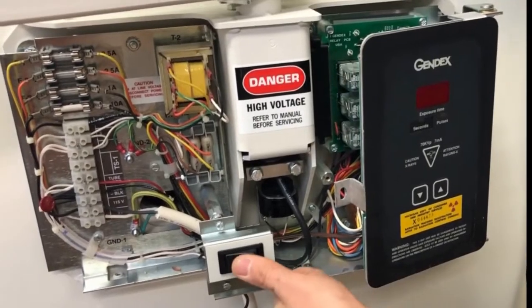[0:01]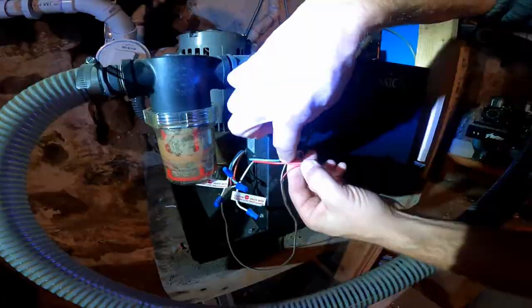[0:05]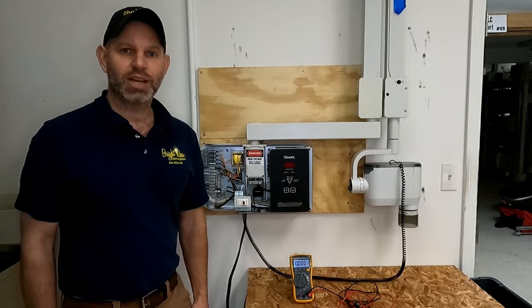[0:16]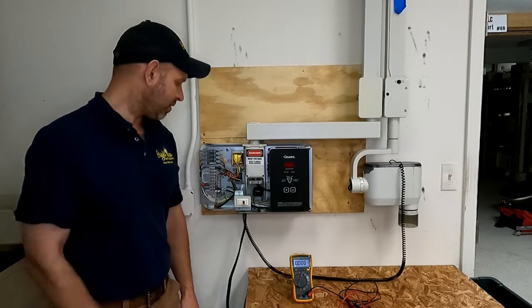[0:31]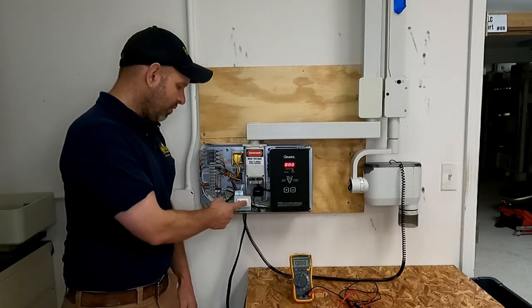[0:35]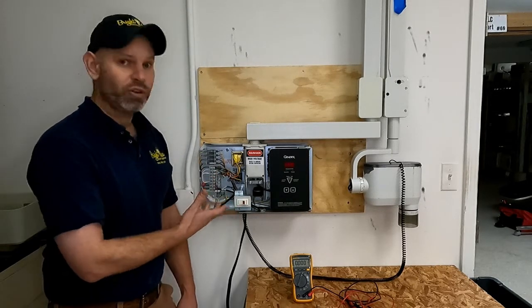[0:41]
Today I'd like to share with you a way to fix your own Gendex 770 x-ray. We see a lot of Gendex 770 x-rays fail for a very common and simple issue, and that is power switch failure. That power switch gets touched every single time you turn your unit on and off. And one of the things that we've learned in our industry and in our role as dental equipment repair technicians is that things tend to break where people touch them. The Gendex 770 is no different.
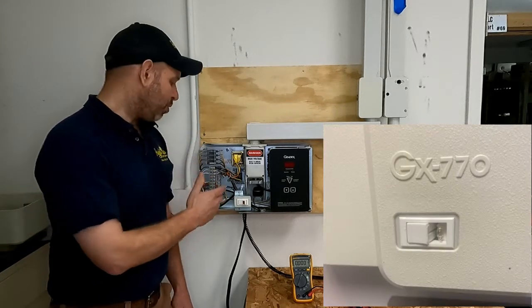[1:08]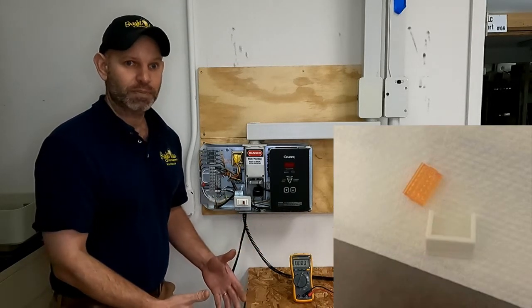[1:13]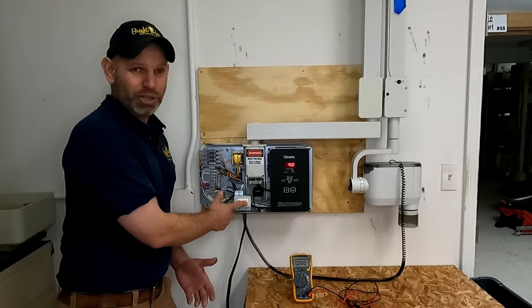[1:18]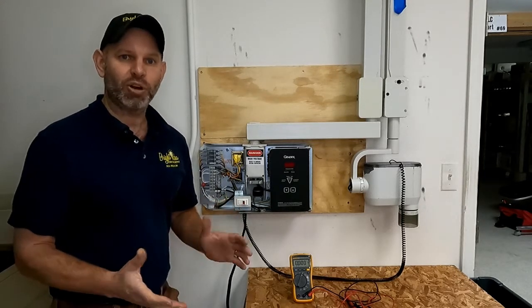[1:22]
Now this x-ray is a terrific x-ray, and if you have them hanging in your office, you're fortunate. These are workhorses, they're reliable, and they look great, and they work great. So if this happens to you, typically what you'll end up with is a scenario where the x-ray power switch seems to crack in half. You will see a light bulb exposed, and you'll see pieces of it fall out onto the ground. When this happens, you will be unable to activate the power switch, and it will either be stuck in one position or the other. If this happens to you, don't be concerned.
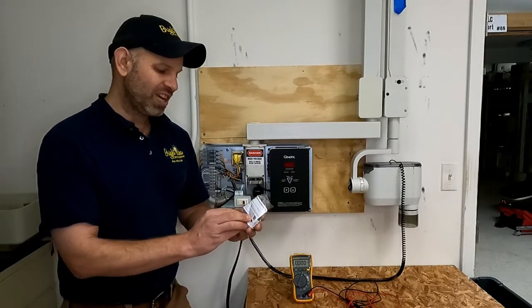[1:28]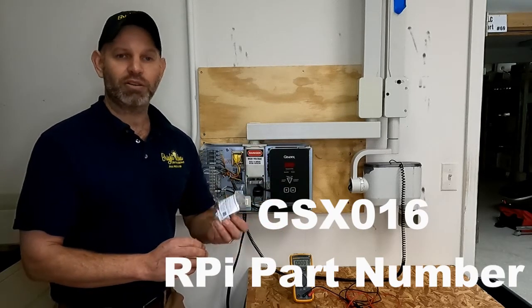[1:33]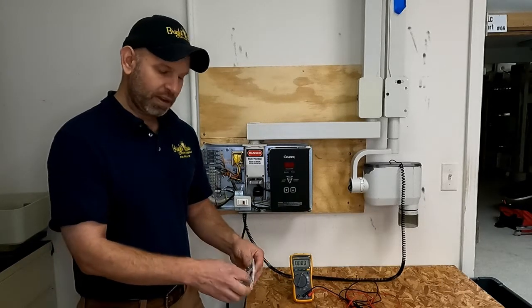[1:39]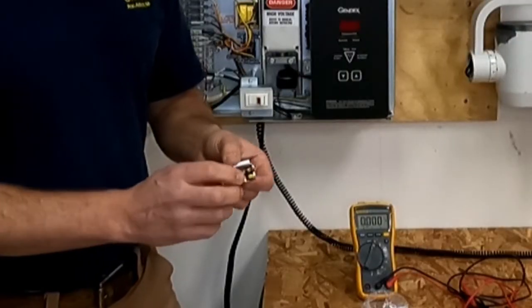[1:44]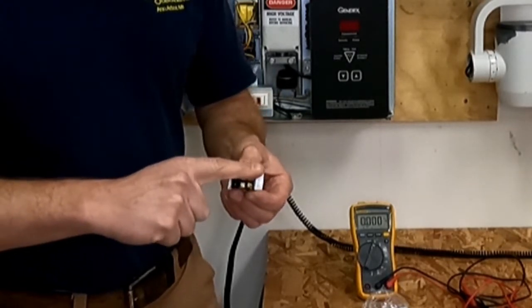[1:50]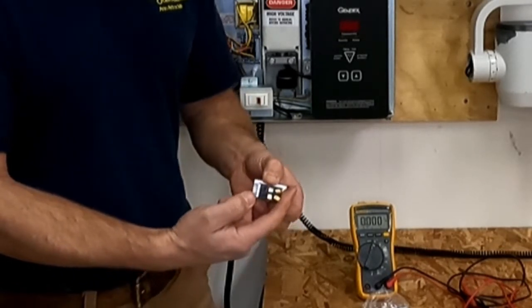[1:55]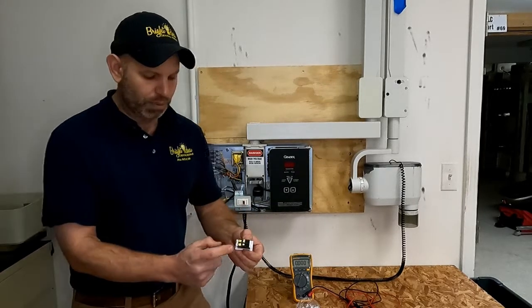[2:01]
You can easily obtain the switch on the internet. This is a GSX-016, and you can find this on eBay, Amazon, or anywhere you buy your dental equipment repair parts. This switch has four connections on it. It's what we call a single pole double throw switch, meaning that when you flip the switch, it connects your line and your neutral on the primary side to the line and neutral on the secondary or machine side. Now, this switch is configured in a certain way, and two of the prongs are bent at 45 degree angles and two are straight.
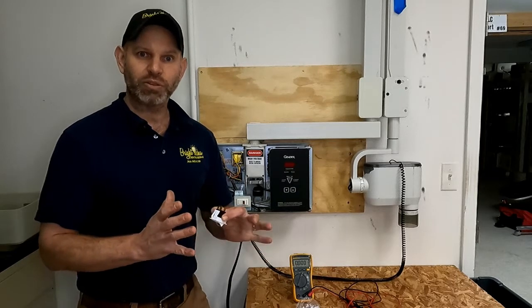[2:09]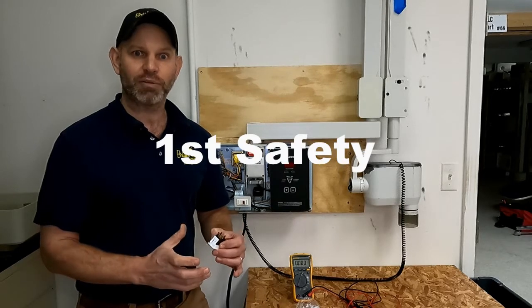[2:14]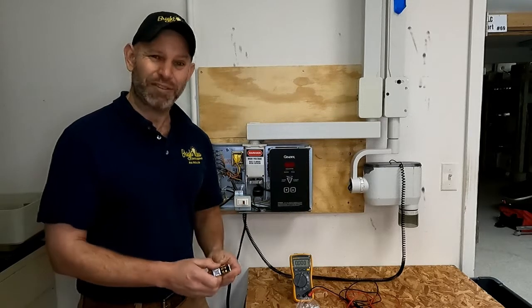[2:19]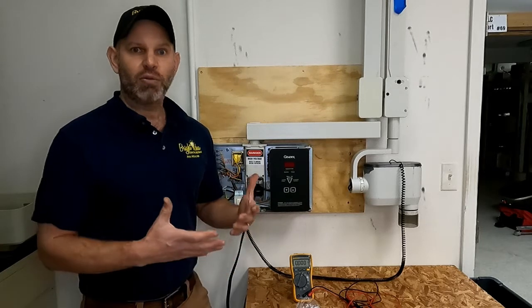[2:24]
We're going to do two things when we do this job. The first thing we're going to do is make sure that we're safe. And the second thing we're going to do is make sure we don't mix up any of these wires. Now, to be safe, we need to make sure that we don't have power applied to the unit. With this being the primary power switch for the x-ray, it always has power to one side of it. So if you start messing around with this switch without actually turning the power off, you're in for a little bit of a nasty surprise. So we're going to help that not happen for you.
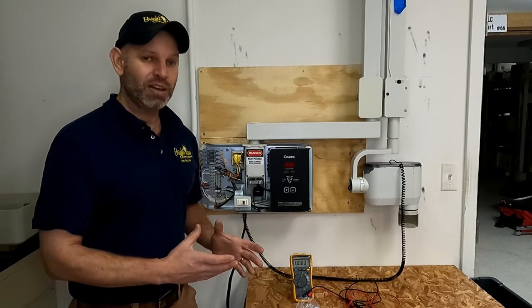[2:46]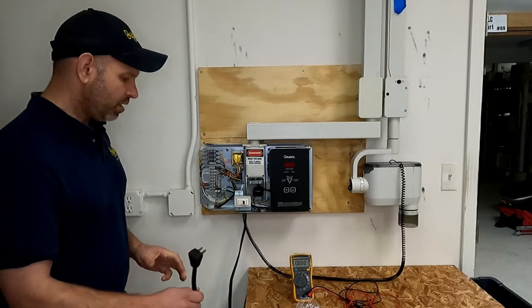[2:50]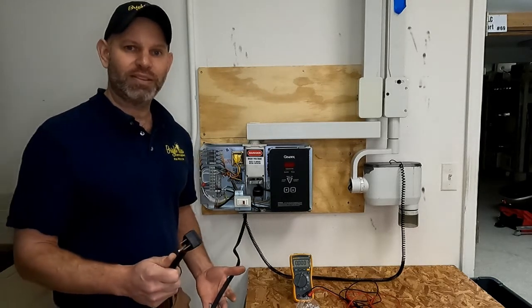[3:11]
Now, the way you're going to make sure that you're not going to shock yourself, you're going to disconnect the power cord from the wall, and then you're going to verify that that power cord is not connected and that it is actually hooked up here to the two poles marked 115 volts and zero. If you're holding this in your hand and it is not plugged into the wall, you know that there's no power applied. Now, this might seem like really simple advice, but this is just in case some of you aren't experienced working with electricity as much as others.
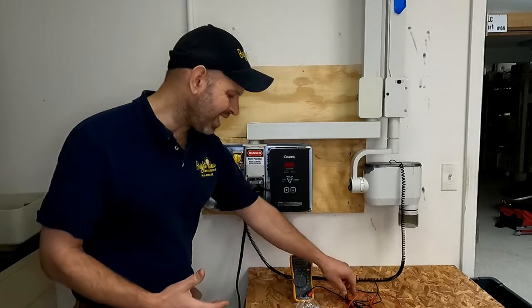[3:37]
The second way to de-energize your unit, if there's not a plug coming out the bottom, is you have to go to your circuit breaker panel, and you've got to find the circuit breaker that's marked for the x-ray in that room. Now, when you flip the breaker off successfully, you're going to kill power to the unit, and that's going to mean you're going to be able to safely work on it. So you can see what the electricity is doing inside the unit.
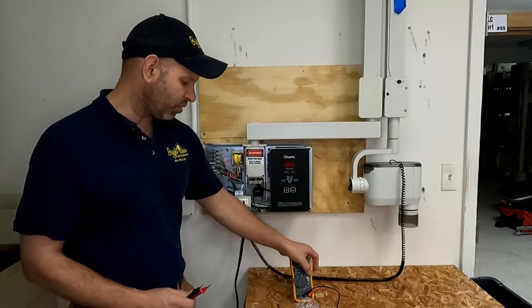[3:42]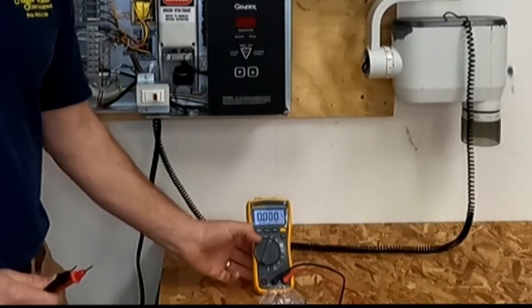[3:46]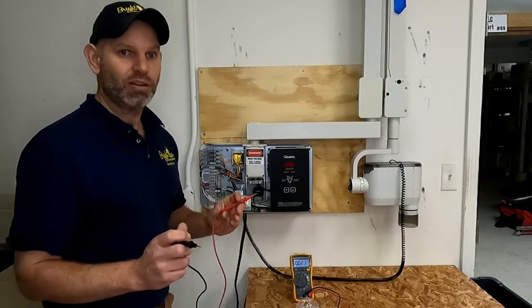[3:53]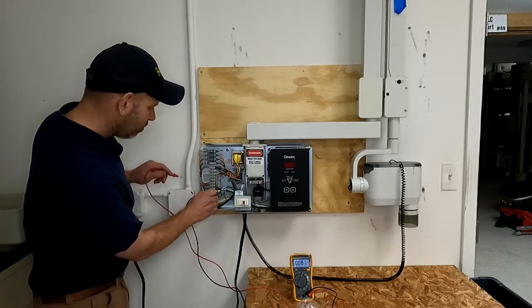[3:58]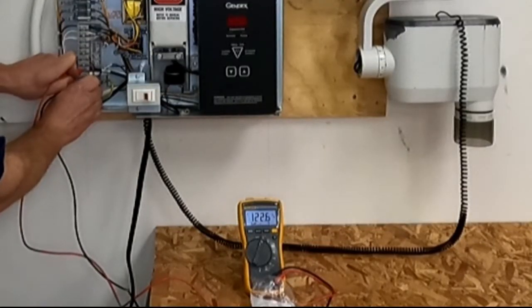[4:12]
We use something called a digital multimeter. In order to use the multimeter, we're going to switch it to the V with a wavy line. This is volts AC. Now, carefully, only touching one probe at a time, we're going to touch the black lead to the ground, and then right here where we have the 115 volts coming in, we're going to touch the red. And that number is going to jump up. And right now I'm seeing 122.6 volts.
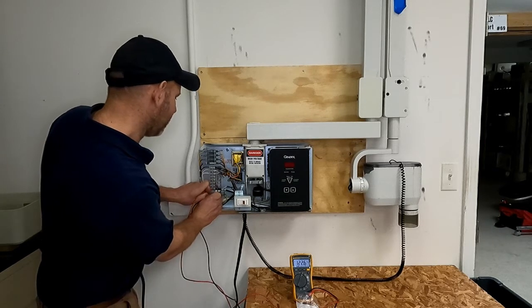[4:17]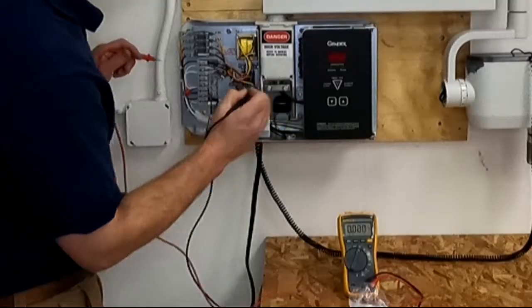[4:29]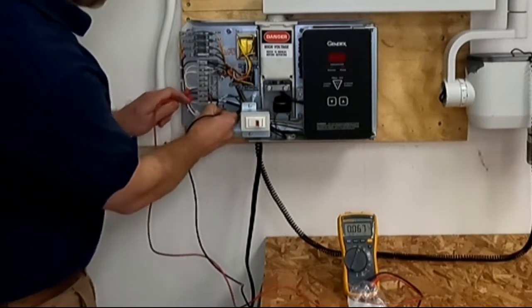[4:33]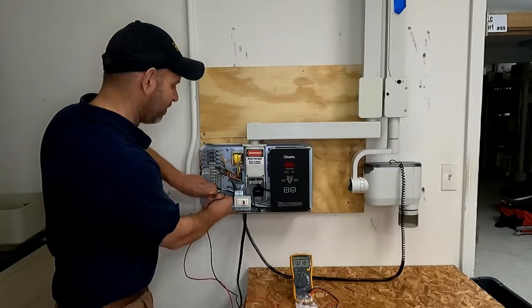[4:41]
Now this power is being applied through the system to the switch. What you would expect to see if the system was de-energized and you did successfully turn off your breaker is you're going to touch to the ground of the unit, which is the ground lug, and then you're going to touch the black, and it's going to say less than zero. Right now it says 0.218, which means it's not energized.
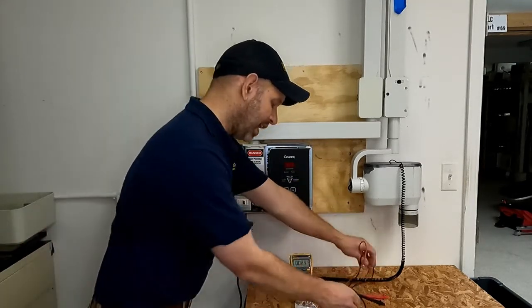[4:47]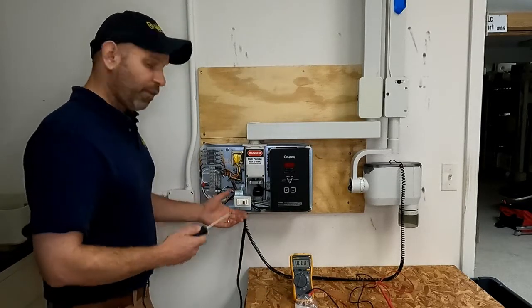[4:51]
Okay, so now that we have a safe unit that is not energized, I can show you how to go about changing the switch. The first thing we're going to do, for ease of demonstration and also just for ease of doing it, and you may choose to do this as well, is there are two screws, one on the top and one on the bottom of this bracket. I'm going to go ahead and take those screws off and set those screws aside. There's just two of them.
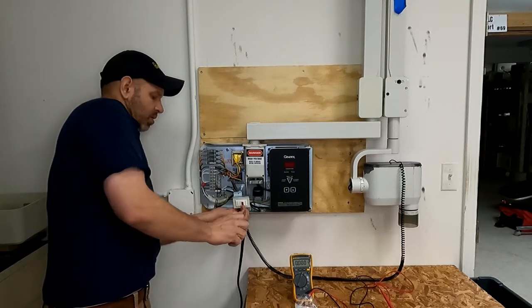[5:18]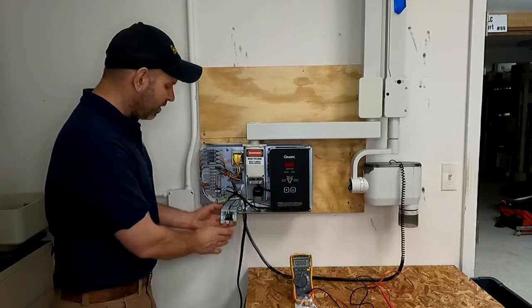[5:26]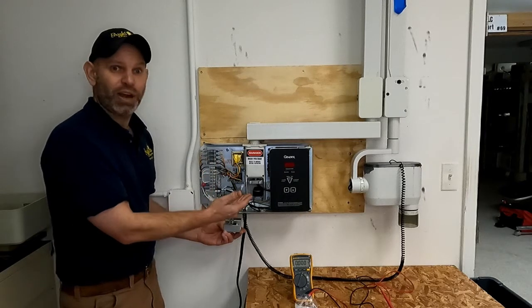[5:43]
And once we take those screws off, we're going to be able to bend this down, and you're going to see the terminals. Now, on one side of the terminals, where there's a bent lug and a straight lug, one of the white wires and one of the black wires on one side of the switch are going to go to the terminal strip. The other black and white wire are going to go in a different direction.
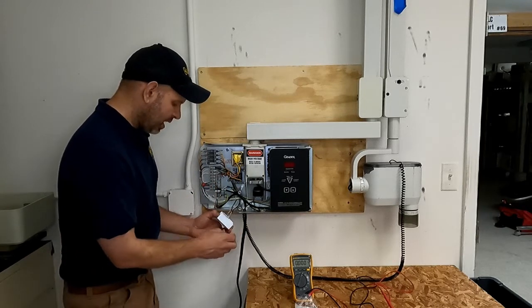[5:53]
Now, what we're going to do is make sure we keep the whites on the same side and the blacks on the other side, and make sure that we don't crisscross them. The way we're going to do this is we're going to first release the switch by pushing in these tabs.
When we push in the tabs, we're going to create a little bit of a way for the switch itself to make it through the hole. So I'm going to just push those four little legs of a spider all together, and then I'm going to advance the switch through the housing.
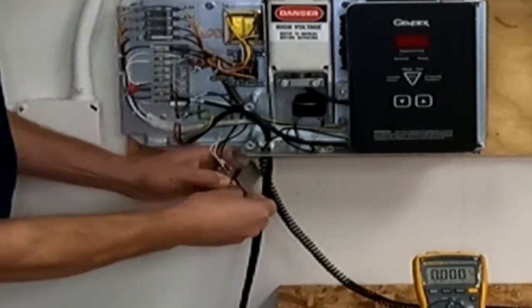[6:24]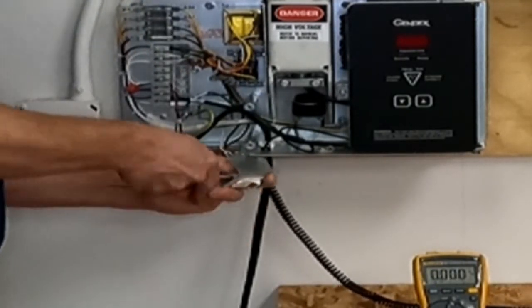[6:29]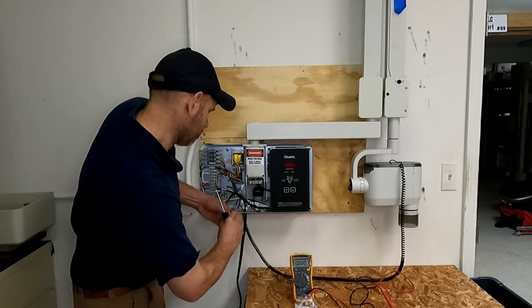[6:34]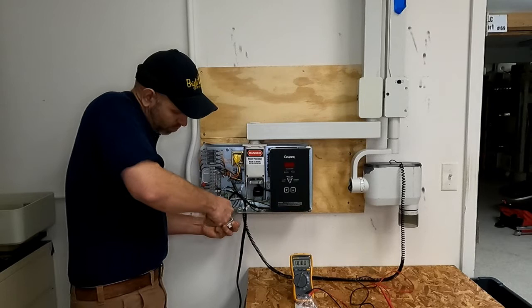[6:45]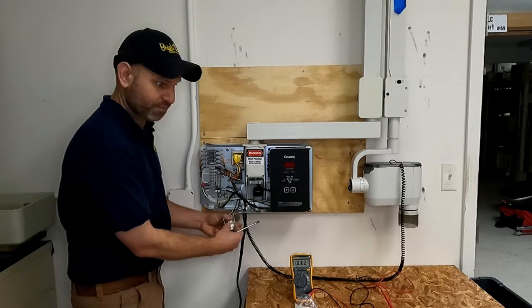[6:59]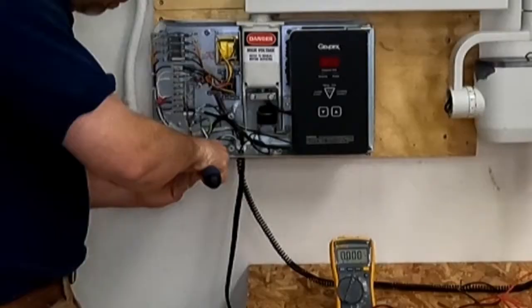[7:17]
Even though I've done this quite a few times, you can see that this is not going to necessarily come out the easiest way. So save yourself a little bit of time and don't plan on doing this job in a big hurry.
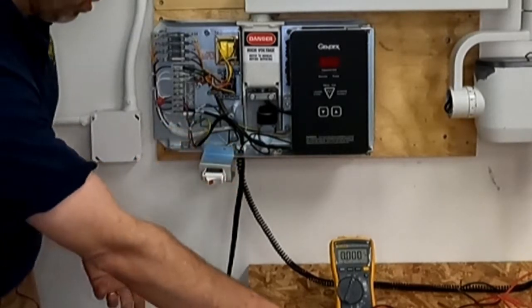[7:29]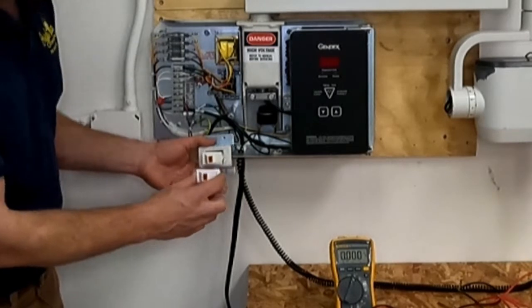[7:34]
All right. So now, the thing we're going to pay attention to is the bracket. We're going to look at the orientation of the switch with regard to the bracket. We're going to make sure that the new switch goes in the same orientation that the old one came out. The first thing I'm going to do is start by working around in a circle.
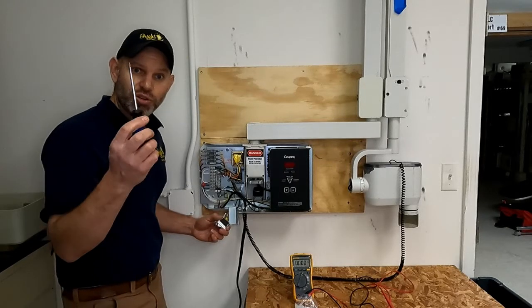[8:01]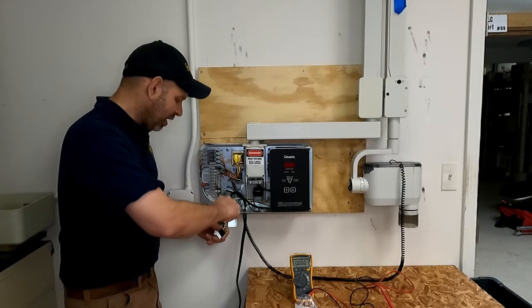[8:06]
I'm going to start, just by choice, with the black wire on the straight lug. So I'm just going to pull that off, and what's happening is it's really digging into my fingers. So something you can do is take your screwdriver and use it on that de-energized circuit, and just twist it a little. Now when you twist it, that screwdriver blade is going to wedge that contact up and out of the way, and that's going to save your finger a little bit.
So I'm going to take that first wire off, and I'm going to insert that wire onto the exact identical lug. And I'm going to push it on until it engages. And now I'm going to do the same thing with all the rest.
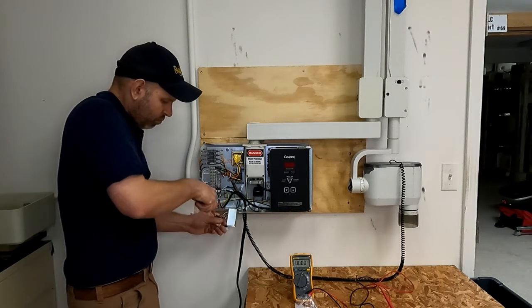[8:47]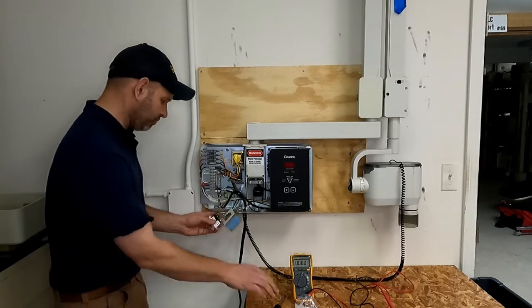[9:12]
All right, now there, two accidentally came off. So what I'm going to do is put the black in line with the black like it was. And I'm going to put the white where it was, and also pay attention to where the remaining white is, and that should be the fourth position.
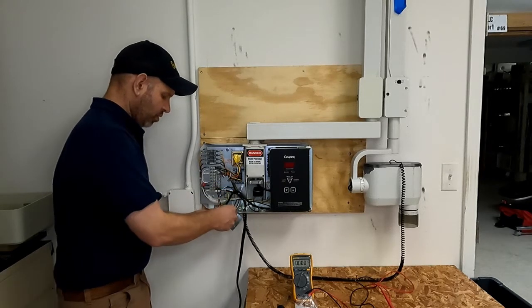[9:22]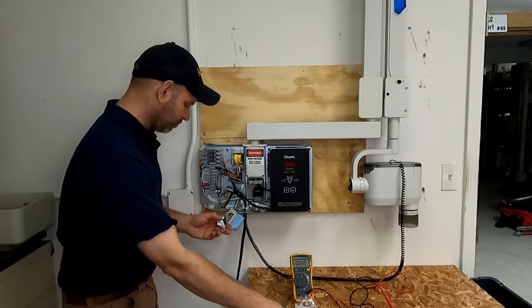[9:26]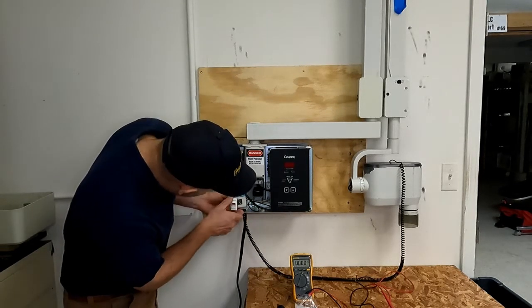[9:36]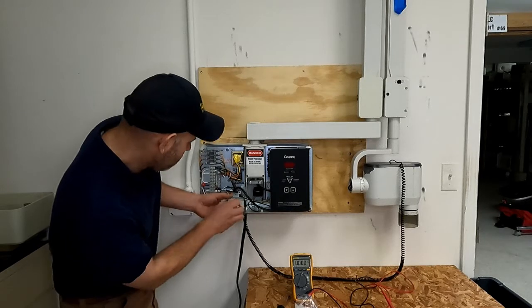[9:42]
All right, so now we've got the old switch out, and we've got the new switch through the hole. Now, I think I've got to remember. I'm pretty sure it was that way. All right, let's see. Now, in this scenario, I think I would have benefited from taking a picture. It goes the other way. All right. So, as you can see, it's easy to get mixed around. Taking a photo ahead of time would probably be a good idea for anything that you take apart electronically.
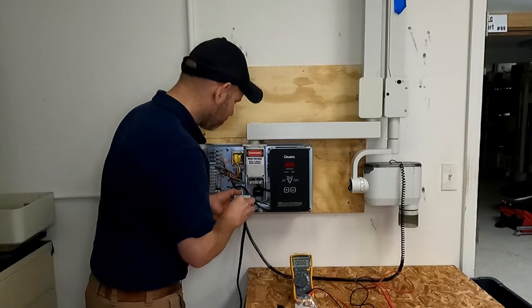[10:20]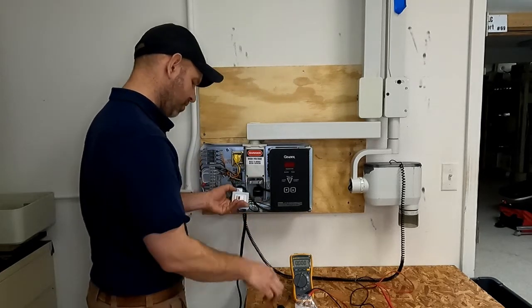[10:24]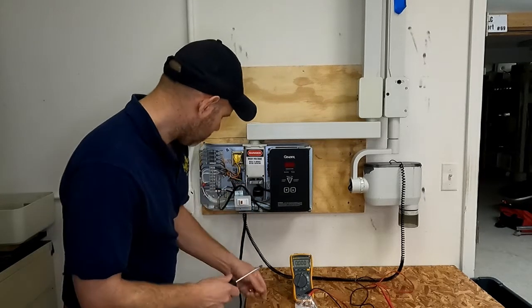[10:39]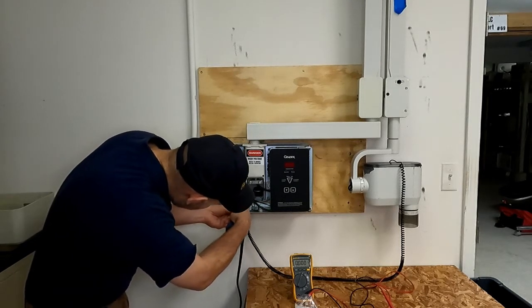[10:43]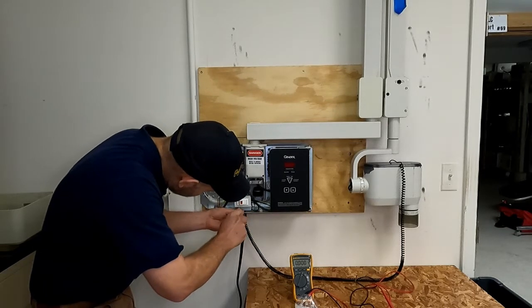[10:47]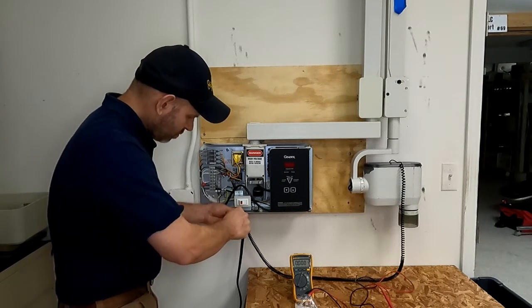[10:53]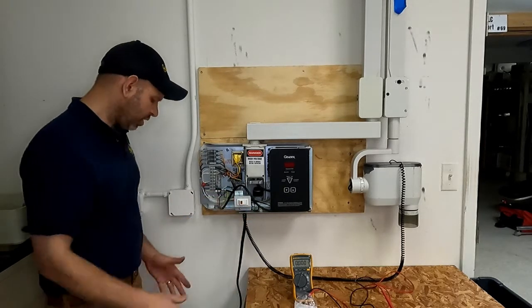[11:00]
All right, so we're going to shove that in there, and we'll take our screws and put them right back in where they were. Test the switch, make sure it feels good. Now we'll go ahead and plug everything back in or flip your breaker back on, and we'll turn it back on.
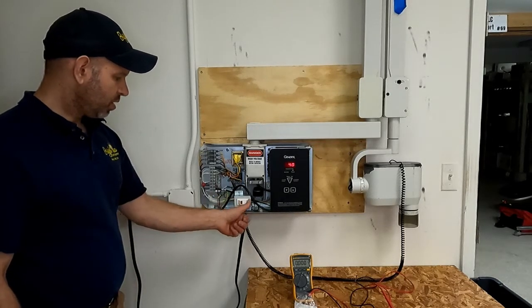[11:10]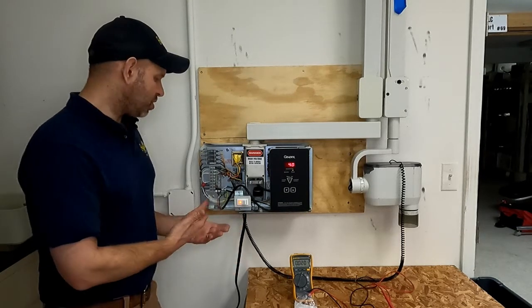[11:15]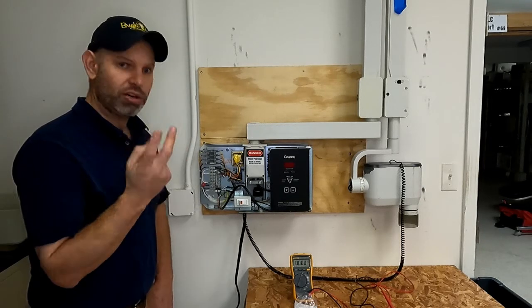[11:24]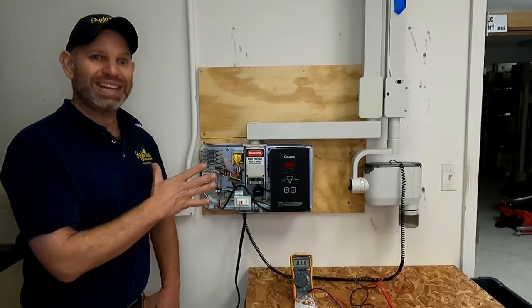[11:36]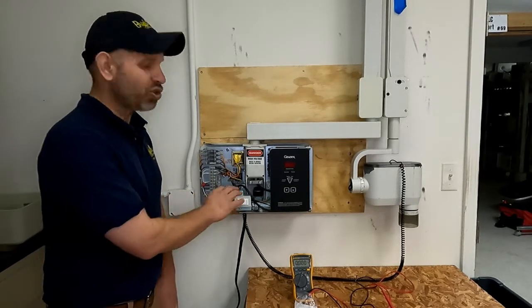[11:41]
All right, so there you have it. This is how you would go about changing your power switch in your Gendex 770 X-Ray. The two main points are making sure that you're safe with electricity, that the system's de-energized when you're working on it, because if it's not, it can hurt you. The second thing is making sure that all your wires get back to where they came off. And I guess like 2A would be making sure you don't put your bracket on upside down, because that is possible.
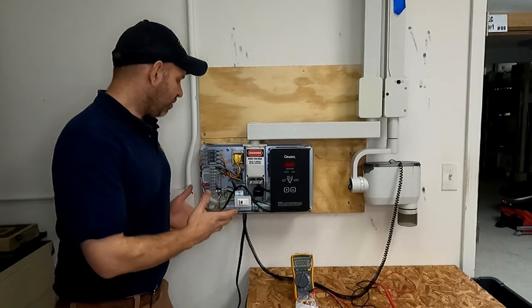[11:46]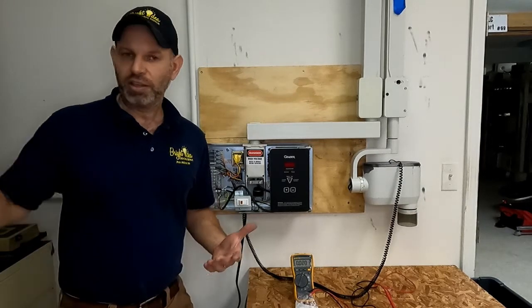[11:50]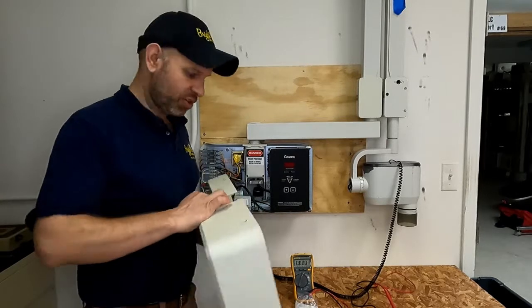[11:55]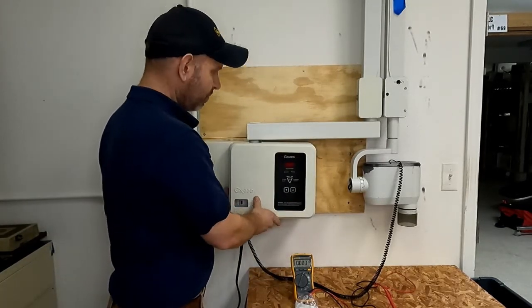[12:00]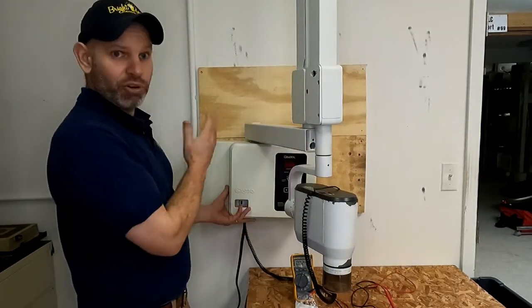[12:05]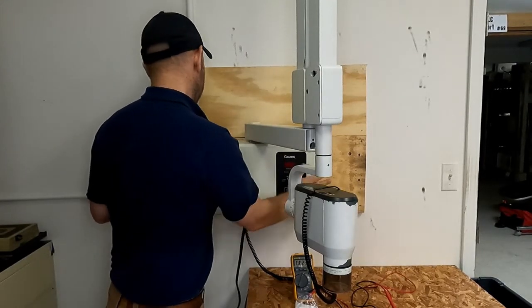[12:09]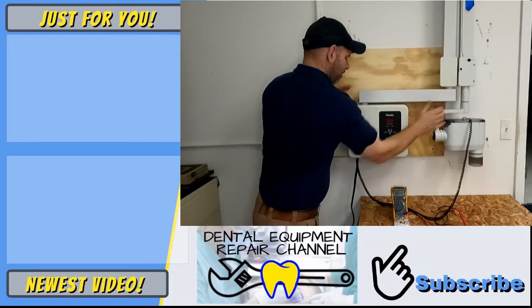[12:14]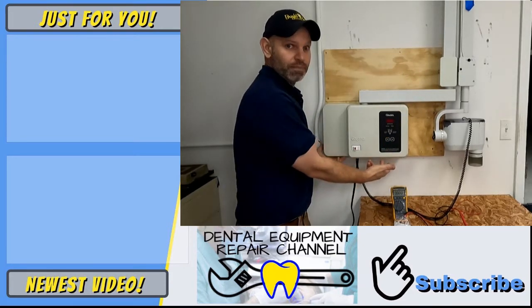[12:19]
Now that we have everything back together and working, the last thing we have to do is put the cover back on. I didn't really talk about taking the cover off in the first place, but it's a really simple installation. All you're going to do is align the cover up the way that it came off, and then move the X-ray arm out a little bit. By moving it out, you're going to free up against the hardware that's hanging down, and this cover should slide on. And once you accomplish that, all you need to do is put back on the screws. There's two in the top and two in the bottom.
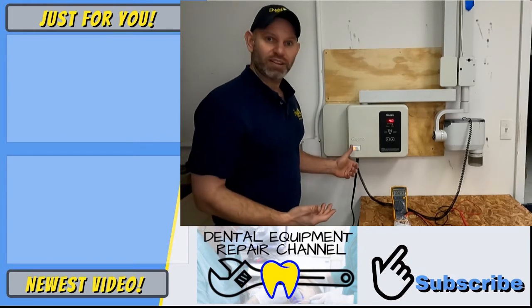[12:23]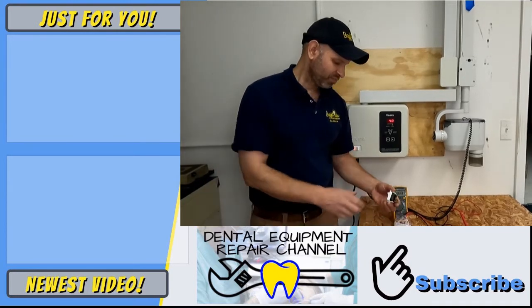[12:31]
So this is the process for replacing the Gendex 770 power switch and how to make sure that you're safe while you're doing it. Thank you.